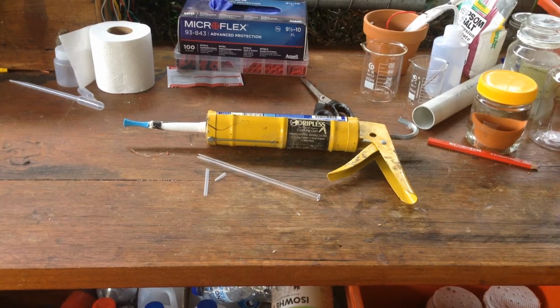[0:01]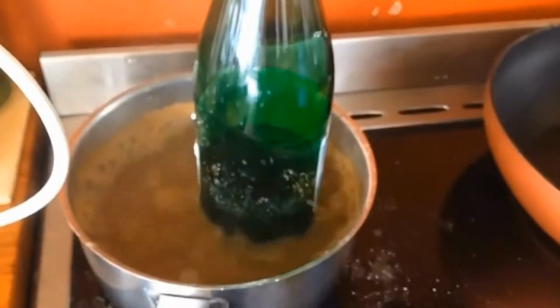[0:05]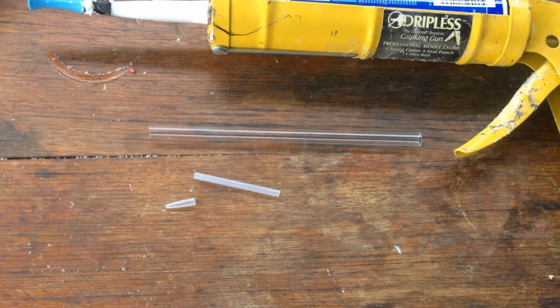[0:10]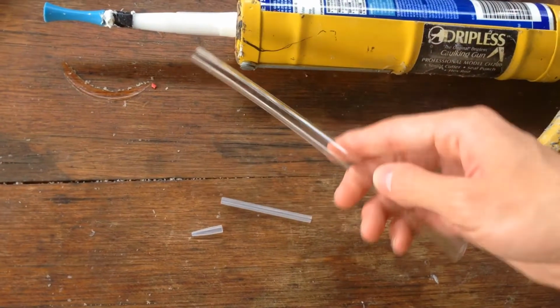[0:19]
So in the near future, I'm going to need to be doing a couple of titrations of some acidic and basic solutions. And rather than going out and buying a proper burette, I thought we could make it out of one of these glass rods.
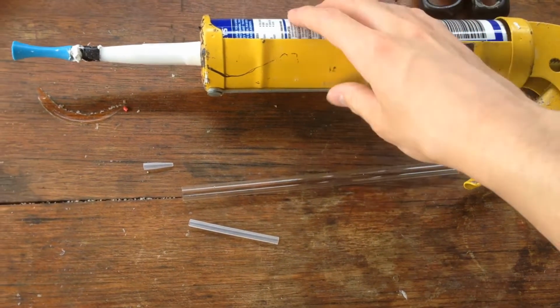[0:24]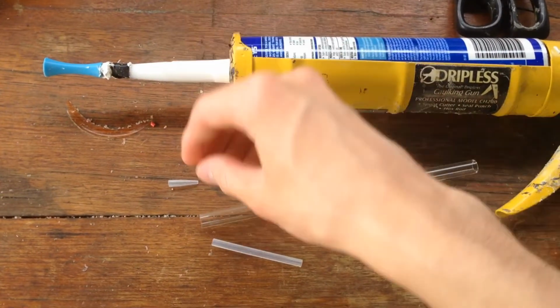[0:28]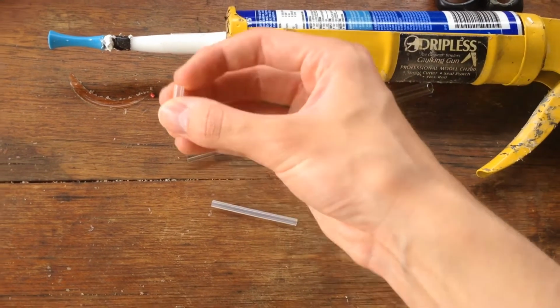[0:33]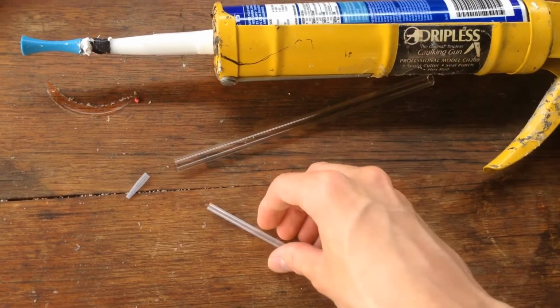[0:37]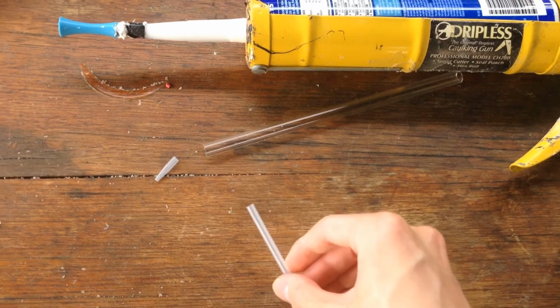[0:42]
So what I was thinking of doing was plugging the end of this glass tube with some silicon, and then just adding this little dropper piece from an old pipette onto the end there, and then it acts as our dropper. And then if we use a large glob of silicon at the end there,
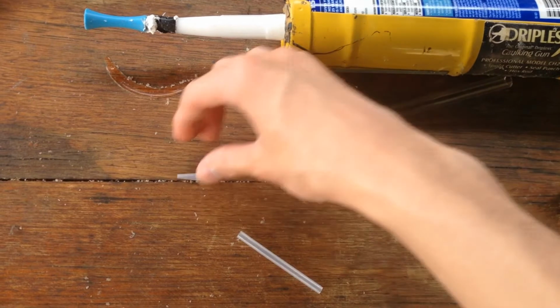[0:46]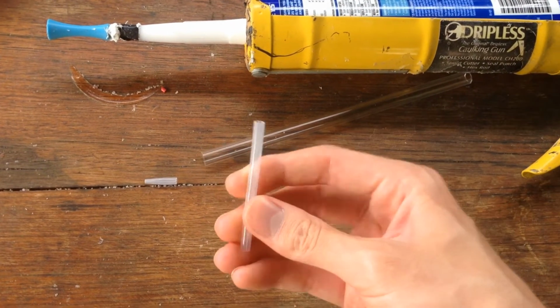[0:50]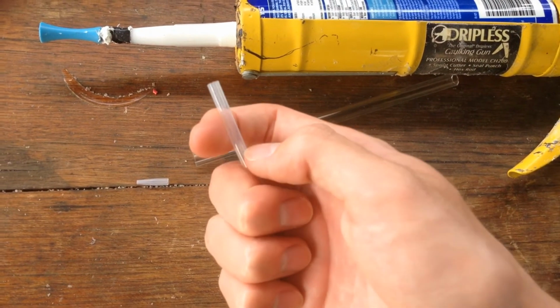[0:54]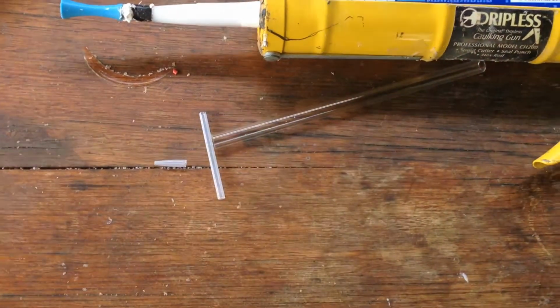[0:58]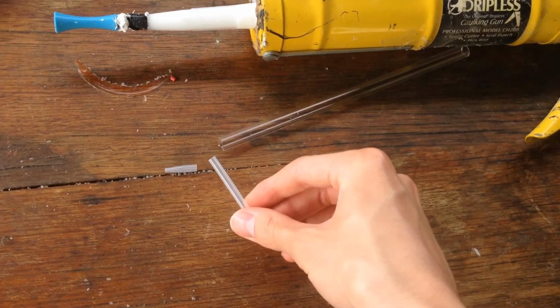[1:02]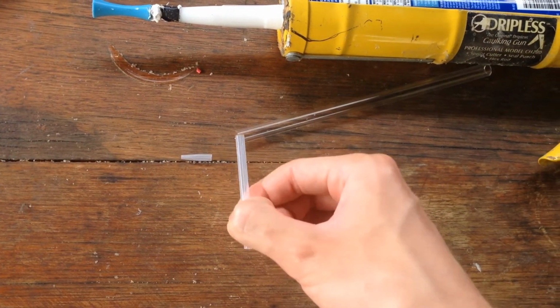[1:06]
what we can also do is, after drilling a hole straight through to let all the water run out, we can also drill a hole in the side and use this piece, which we'll plug both the ends of and drill a hole in the top and a hole in the bottom, and use that as a kind of stopcock, and we'll see how well that works. I'll silicon all this up, and then we'll wait a day for it all to dry and see if we can get it to actually work.
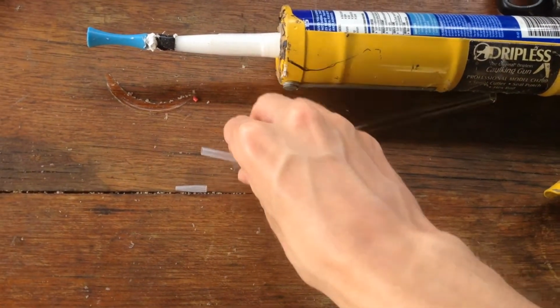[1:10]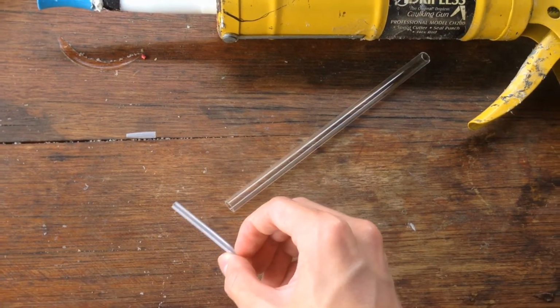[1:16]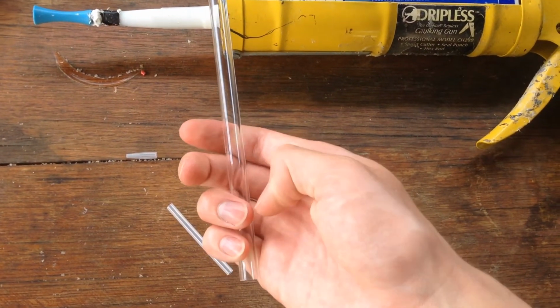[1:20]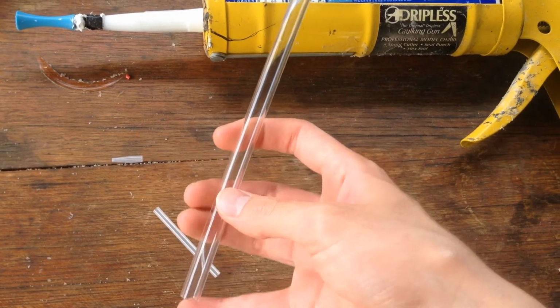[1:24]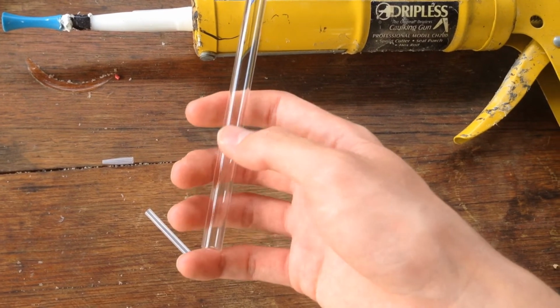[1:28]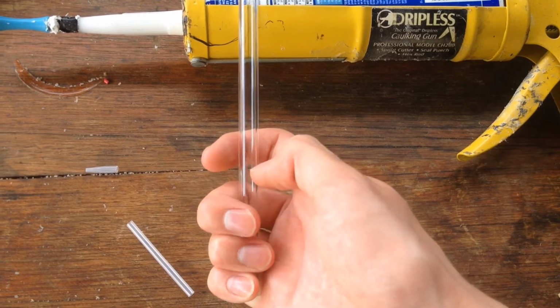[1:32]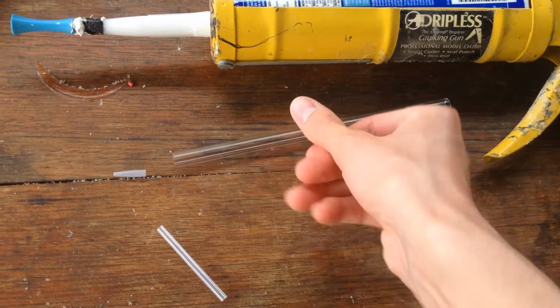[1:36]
And if it doesn't, we'll see if we can fix it. And then I don't have any way of marking measurements on the side of the glass tube right now, but once I get a graduated cylinder that can measure accurate volumetric measurements, then we'll put some measurements on the side and we'll be able to do some relatively accurate titrations.
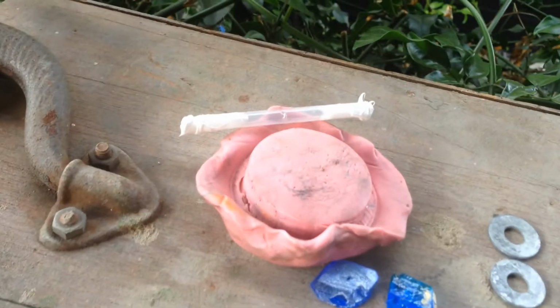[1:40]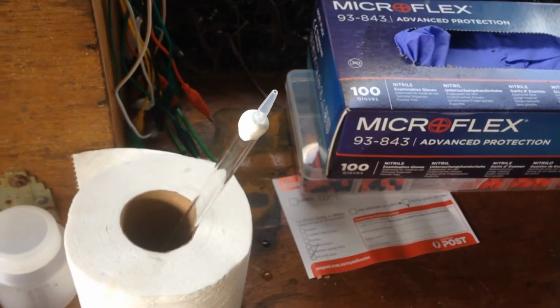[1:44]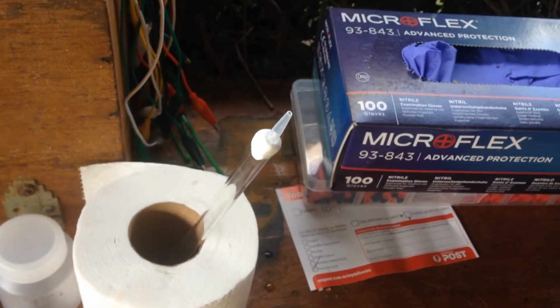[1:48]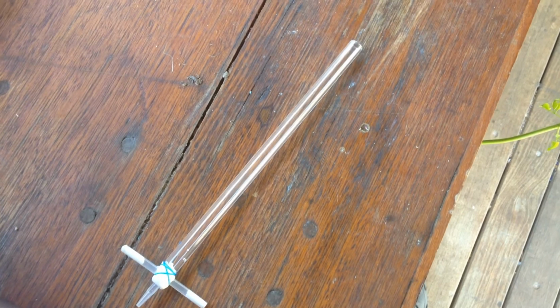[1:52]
So now that both the burette and the stopcock piece are drying, we'll wait 24 hours or so and drill some holes in the sides of our burette piece. So it's 24 hours later, all the silicon has dried.
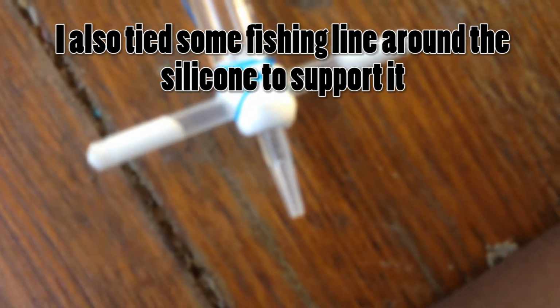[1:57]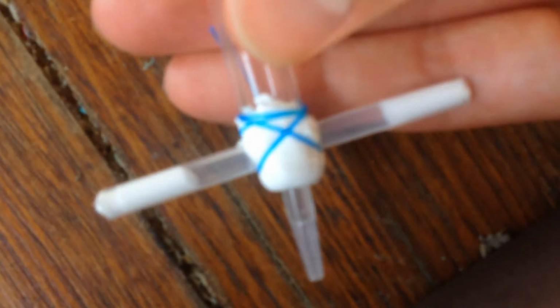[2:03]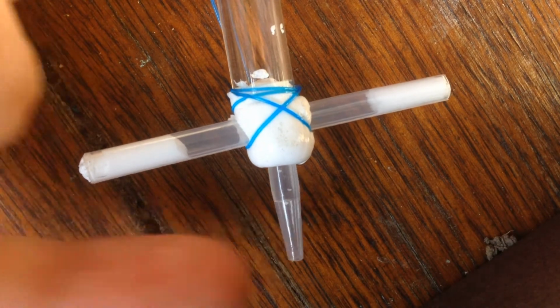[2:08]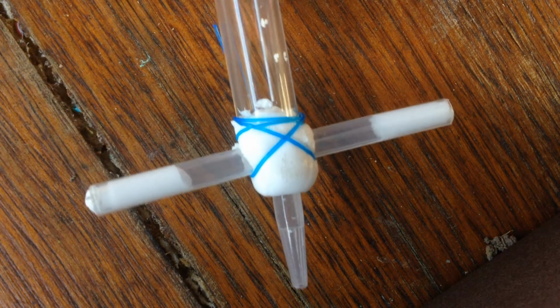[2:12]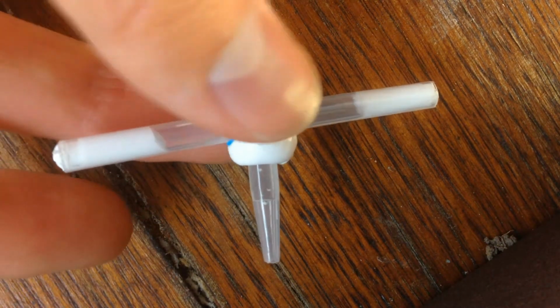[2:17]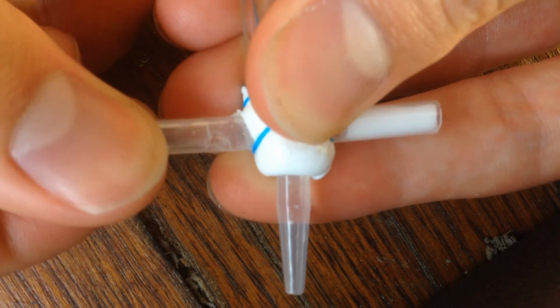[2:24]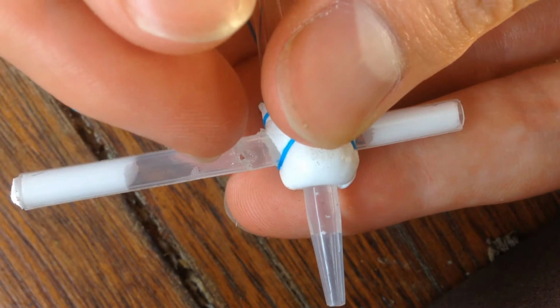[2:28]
You can see that all of this, I've drilled a hole that goes right from the end all the way into the glass tube here. So we've got a passage for the water to flow from the tube and drop out the dropper there. I've drilled a hole sideways for the stopcock to go in. And if I take the stopcock out just a little bit, you can see I've drilled a hole that goes straight through it like that, just there.
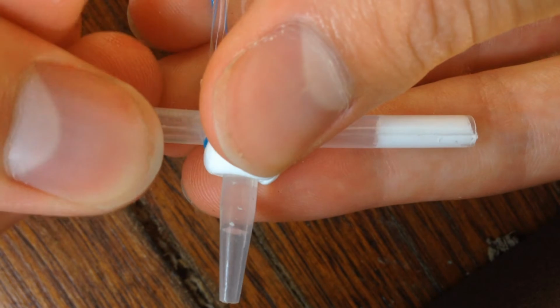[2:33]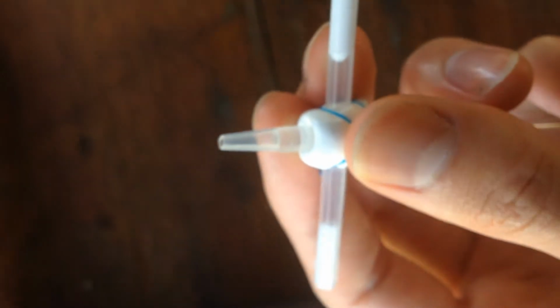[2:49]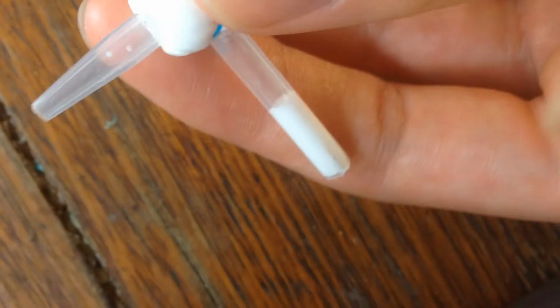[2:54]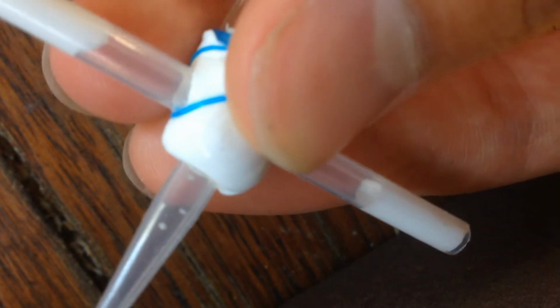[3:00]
And so if we put that back in, when we turn it like that, we let the passage of water go through. You might be able to see the water that's in the very end there. If I take the camera back a little bit, you can see that just slowly draining out because I've opened the passage. Again, you can also close the passage just by turning it 90 degrees. So I'll fill up the glass tube with some water and we'll see how it actually performs when we try to drop the water through the burette.
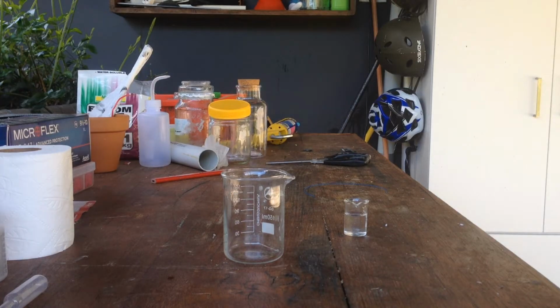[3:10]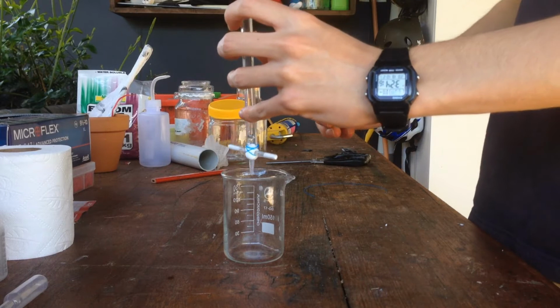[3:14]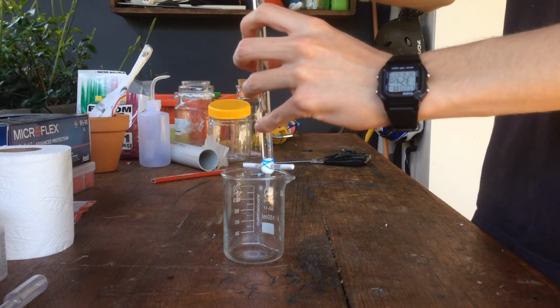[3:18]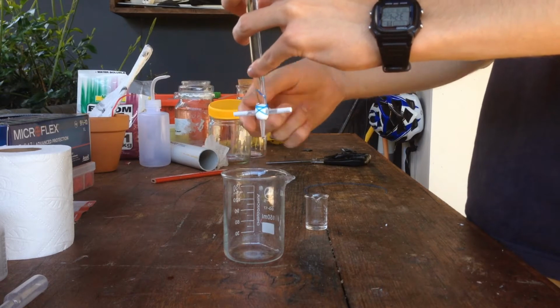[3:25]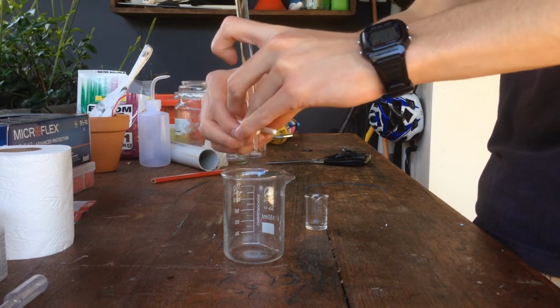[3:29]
Alright, so I've closed the stopcock here and I've got just a few milliliters of water that we can pour straight into the glass tube. So we'll fill it up and you can see with the stopcock closed we've got very minimal dripping. I can get it so that it completely stops dripping, but that's a little bit tricky. We've got to kind of adjust it.
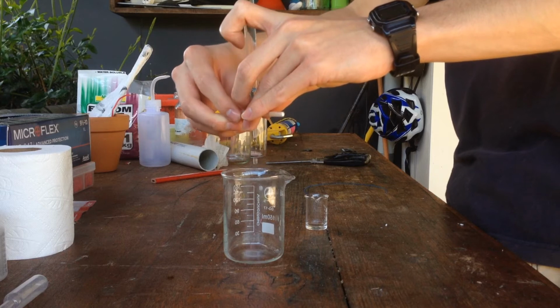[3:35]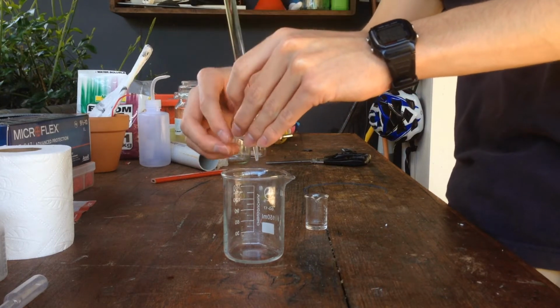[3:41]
But when we open it, you can see that we get a nice flow of drips and then we can close it quite easily. So it should be good for some pretty inaccurate titrations, I guess, but it should be good nonetheless.
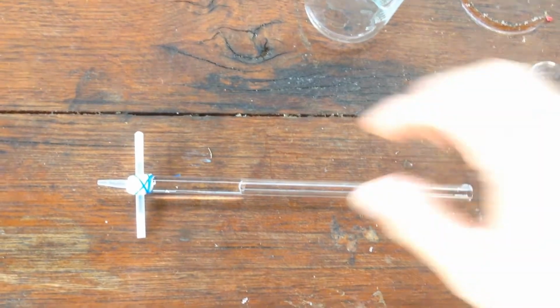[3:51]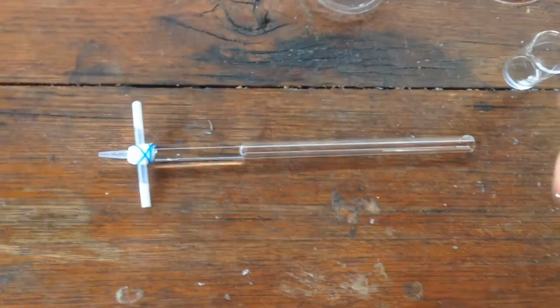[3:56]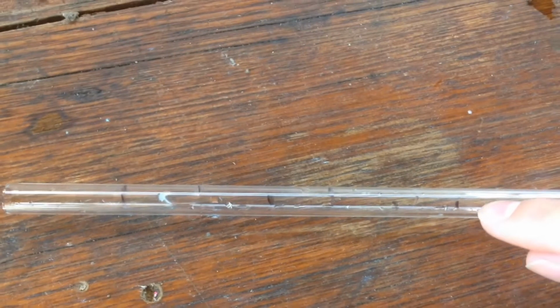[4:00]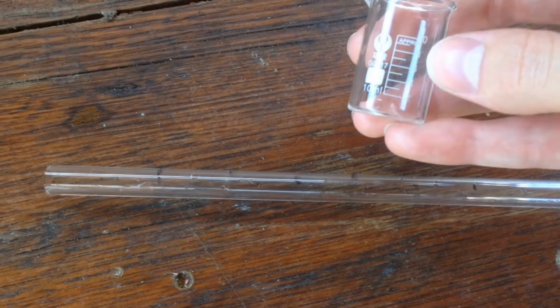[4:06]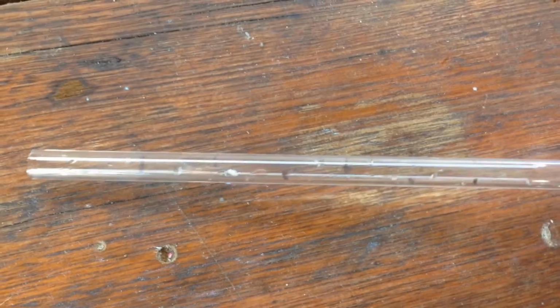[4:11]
So now that we know that it works relatively well, we might have a go at doing an actual crude titration with this thing. First of all, I've just made some pretty inaccurate milliliter markings on the way up the tube, just using the markings on the side of this 10 milliliter beaker. It's not very accurate, but once I get a graduated cylinder, I'll make some proper markings.
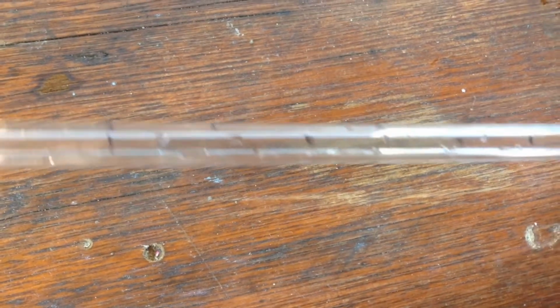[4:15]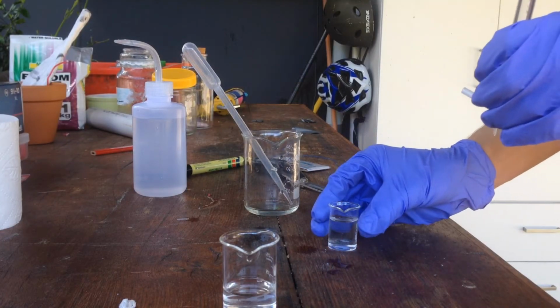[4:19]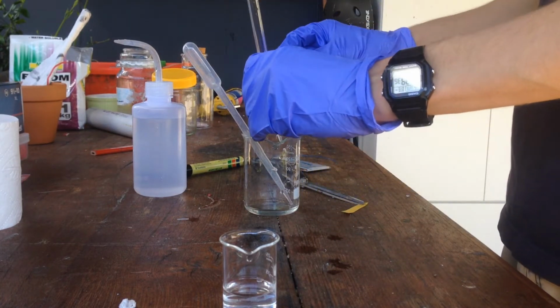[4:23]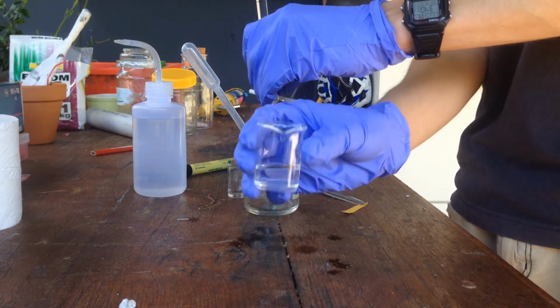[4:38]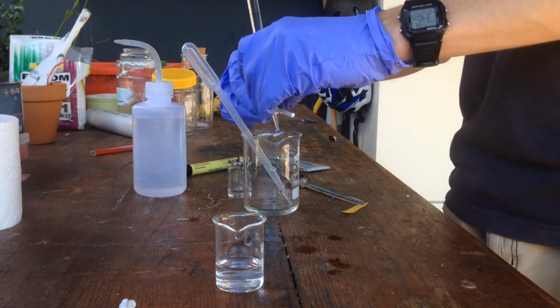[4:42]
So I've got a few milliliters of 6.4% hydrochloric acid here, and we'll just pour that straight into the top. And we've got it on a slow drip, so we can fill up the actual dropper piece with our solution. And I've also put together a sodium hydroxide solution that we don't know the concentration of. So we'll stop at this, if I can get it right.
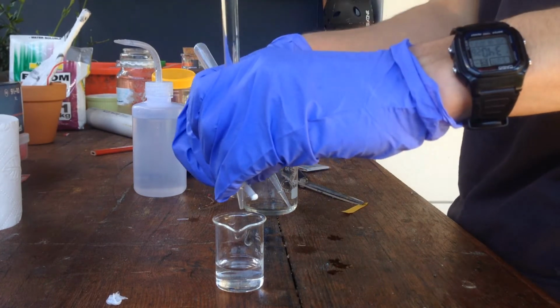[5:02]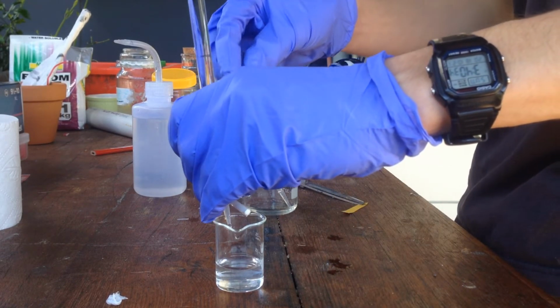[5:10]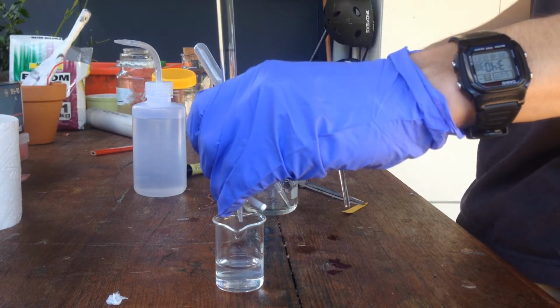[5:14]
Alright. And then we will match it with the markings that I've made previously. That's looking about right. And we'll start dropping this in a bit at a time and stoppering it. And then we'll grab our glass stir rod and test it with some pH paper over here.
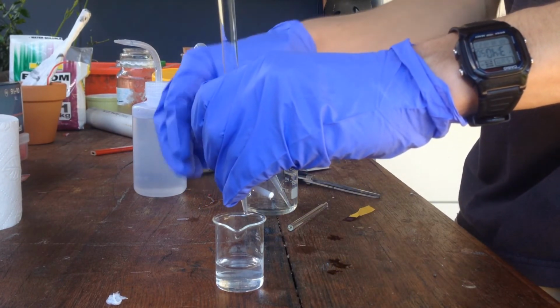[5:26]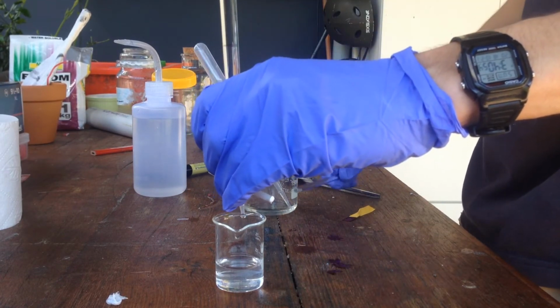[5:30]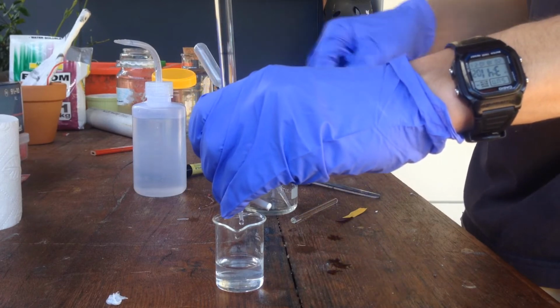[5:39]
So still strongly basic. I'll show you the pH paper now, just there, and we'll just keep dropping that. I've got it on a slow drip right now, and I'll keep getting bits of the solution and testing it with the pH paper until it reaches pH 7, so the pH paper should go green once we reach a neutral pH.
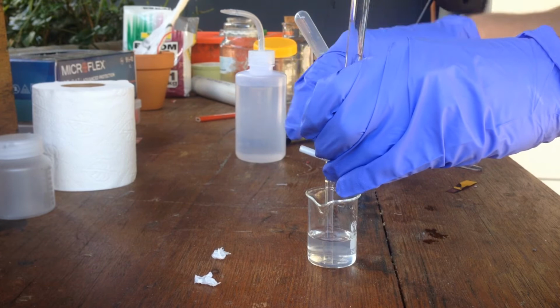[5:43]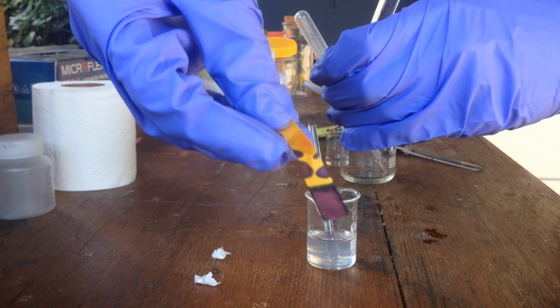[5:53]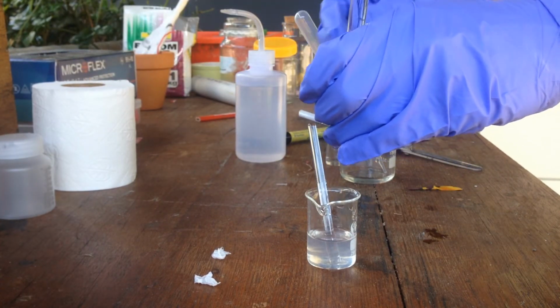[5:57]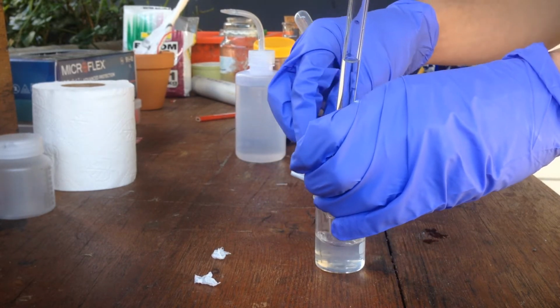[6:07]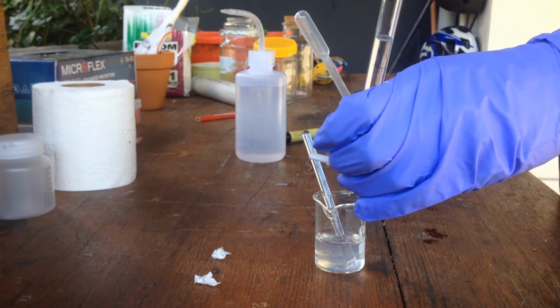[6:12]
And so now you can see we've reached a pH close to that of neutral up the top there, slightly acidic, but that's alright, it's not very accurate anyway. And I can see that we've used a little over 3 milliliters of our 6.4% hydrochloric acid solution. So if we work out from that, we can work out the concentration of sodium hydroxide that we started with.
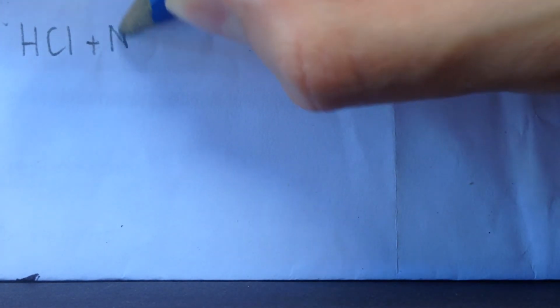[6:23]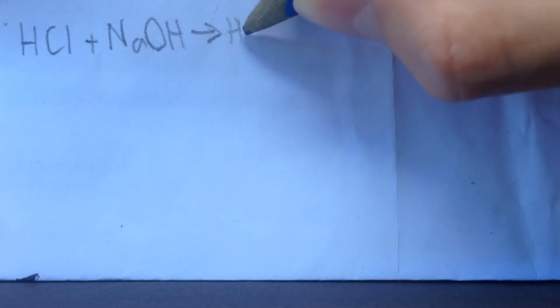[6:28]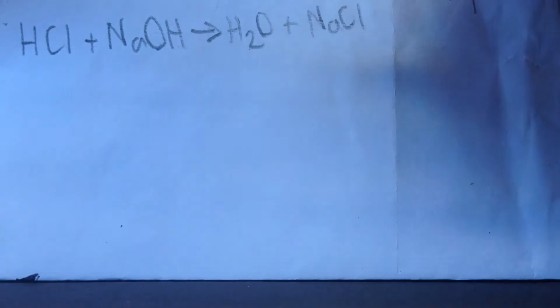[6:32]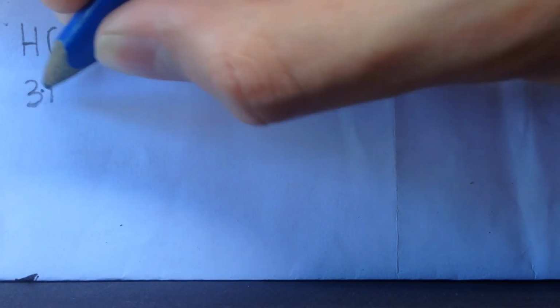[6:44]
So to find the concentration of the initial 10 milliliters of sodium hydroxide solution, we can do the stoichiometry. We've got our reaction, hydrochloric acid plus sodium hydroxide goes to water and just regular table salt. And you can see that we've got a 1-to-1 ratio between hydrochloric acid and sodium hydroxide. So first of all, the amount of acid that we used was 3.1 milliliters of
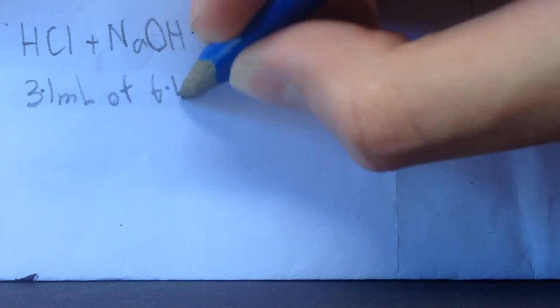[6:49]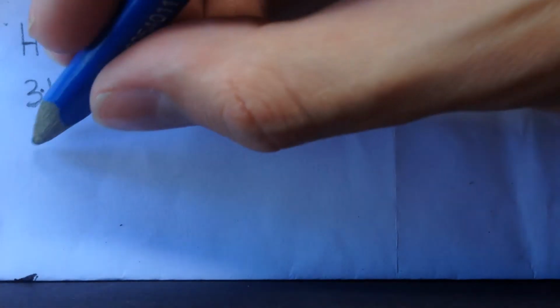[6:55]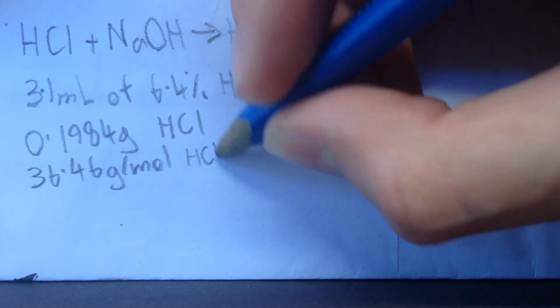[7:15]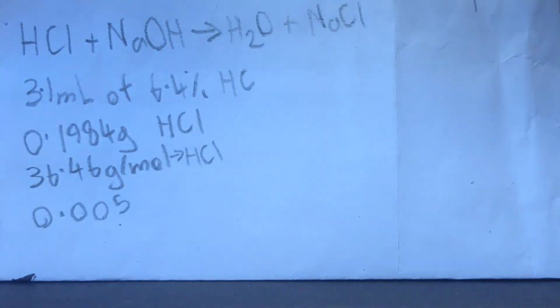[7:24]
6.4% hydrochloric acid. This corresponds to 0.1984 grams of HCl, which again corresponds to using the 36.46 grams per mole molar mass of hydrochloric acid. We get roundabout 0.005544 moles of hydrochloric acid that were in the reaction.
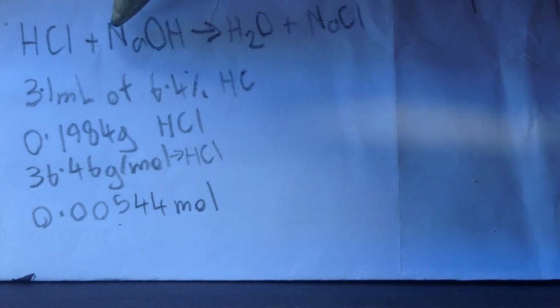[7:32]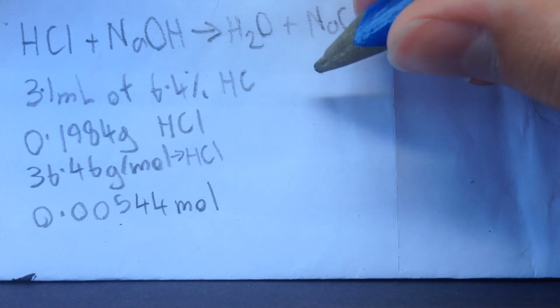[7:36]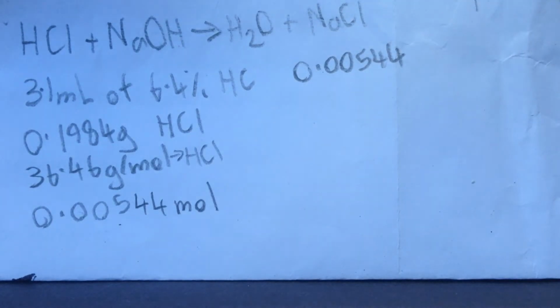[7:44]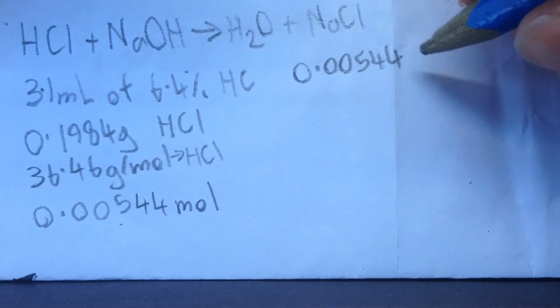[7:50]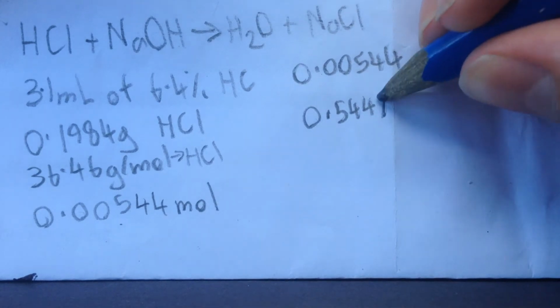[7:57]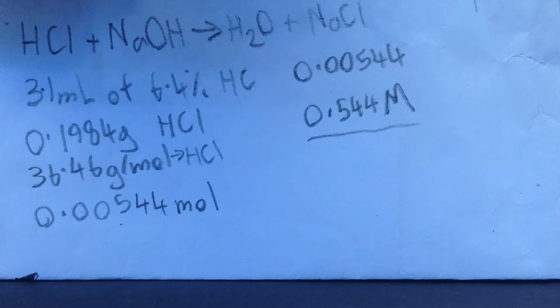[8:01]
And because we've got a 1-to-1 ratio between hydrochloric acid and sodium hydroxide, the number of moles of sodium hydroxide that we used was also 0.00544. And then because it was in 10 milliliters, which is 1/100th of a litre, we can multiply this by 100, and we get 0.544 molar solution of sodium hydroxide.
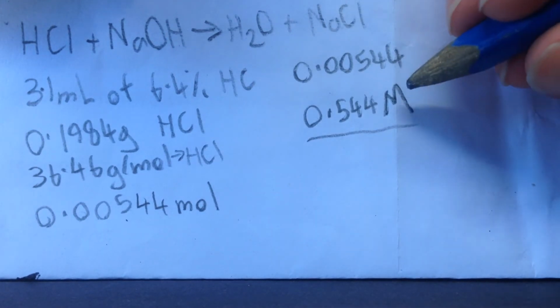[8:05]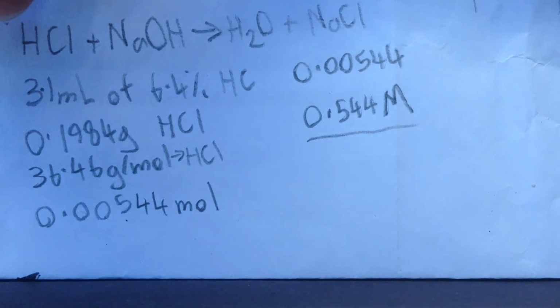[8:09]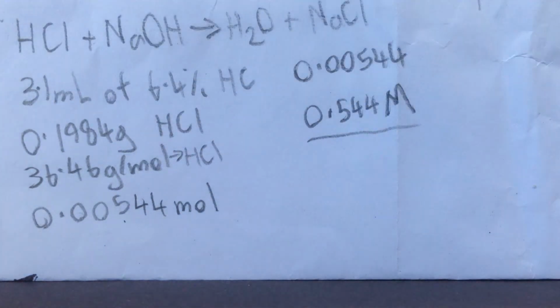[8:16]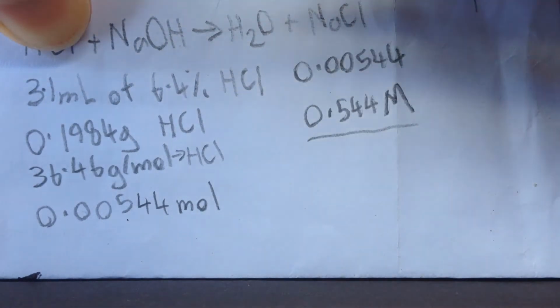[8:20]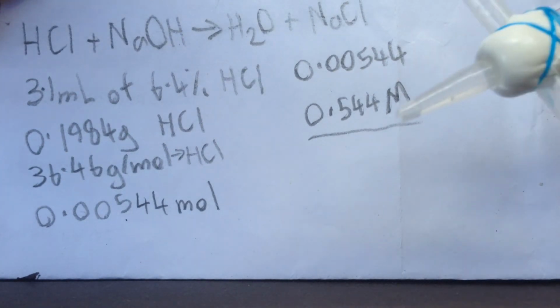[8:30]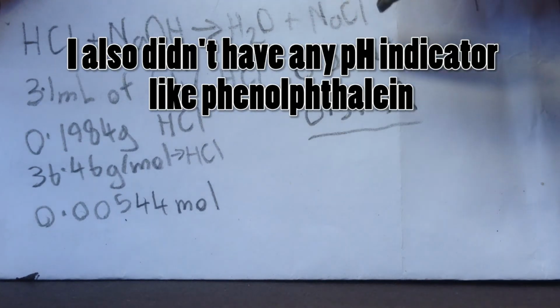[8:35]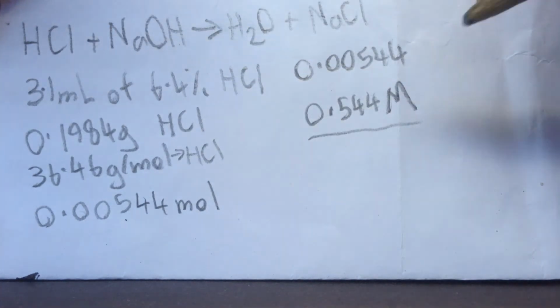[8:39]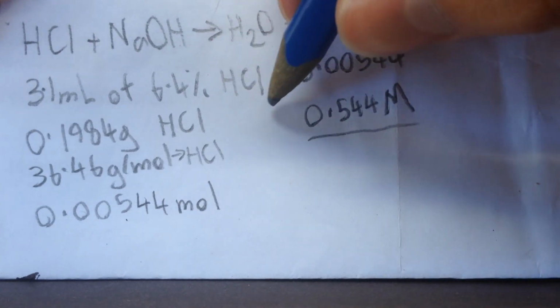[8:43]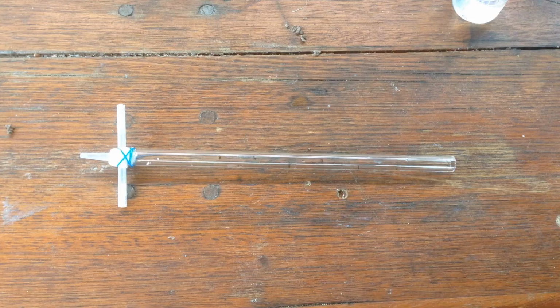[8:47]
Now, what I think we've done to get this value is actually perform probably the most inaccurate titration ever, because with this tiny thin tube and these milliliter markings, also the 6.4% hydrochloric acid, that should have an L on there. 6.4% I just got from diluting commercial grade 32% hydrochloric acid by 5 times, and obviously this dropper isn't going to be accurate, and I probably didn't even start with 10 milliliters or even use 3.1 milliliters of hydrochloric acid. This is probably, I don't know, 20%, 50% out. It's a pretty useless value, but it's a proof of concept anyway.
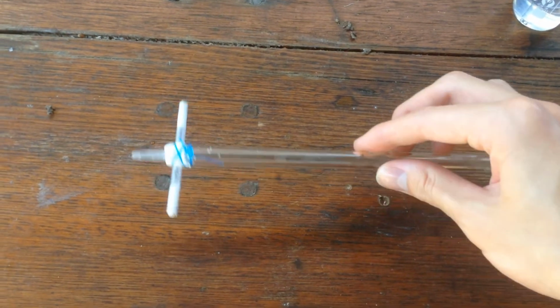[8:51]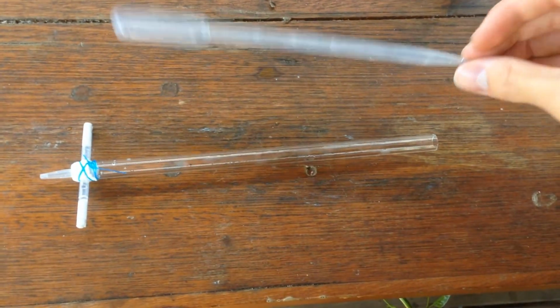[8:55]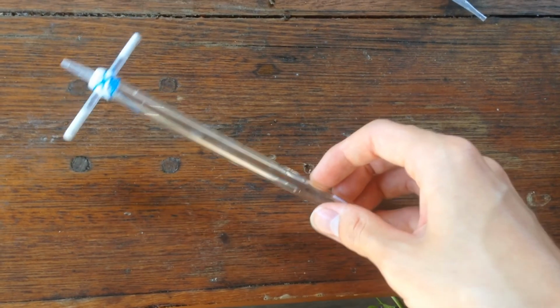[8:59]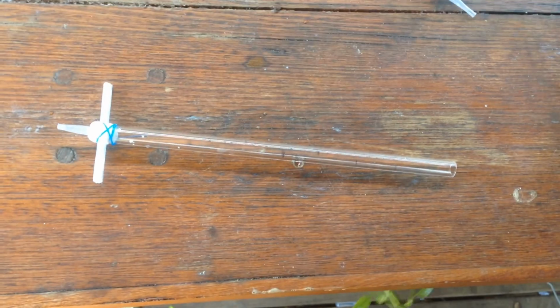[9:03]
So it works somewhat. It's probably no more useful than just a standard pipette, but as it is now, it works, and I mean, it's called scrap science, so I think we're done. Catch you next time.